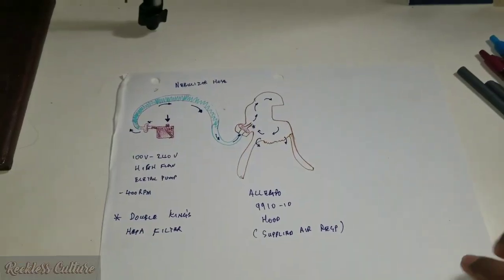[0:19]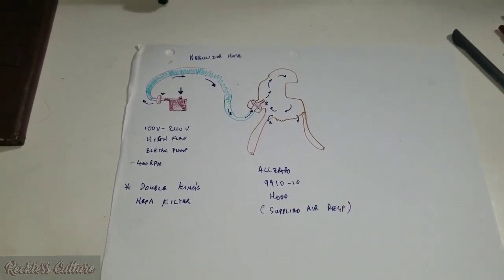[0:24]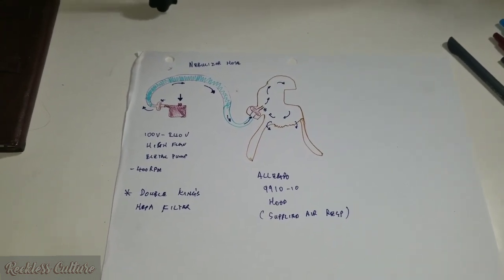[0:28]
I know, trying times. So, initially, what I'm going to talk to you guys about today is how to build your own PAPR respiration system. Let's go. All right, so this is the schematics for the system I built. Well, any general system.
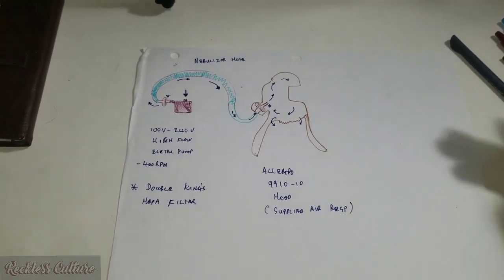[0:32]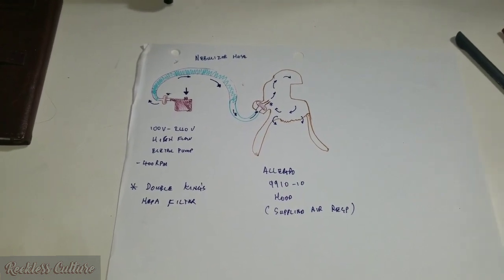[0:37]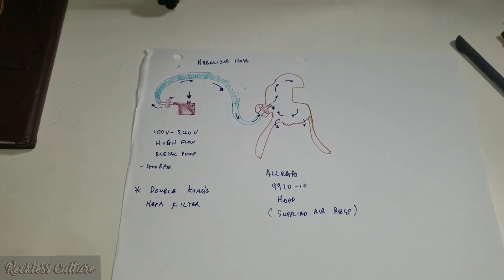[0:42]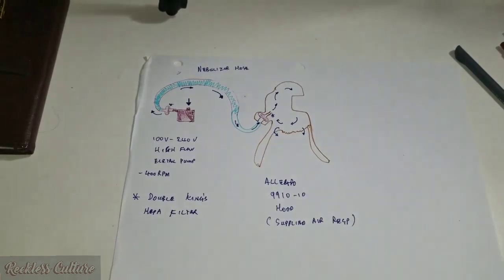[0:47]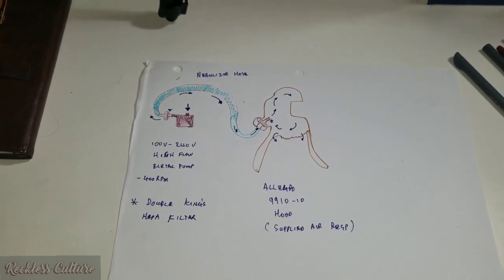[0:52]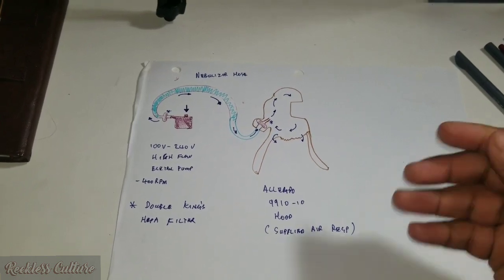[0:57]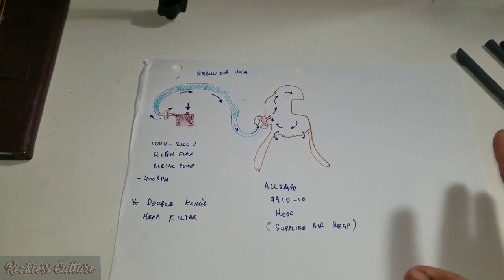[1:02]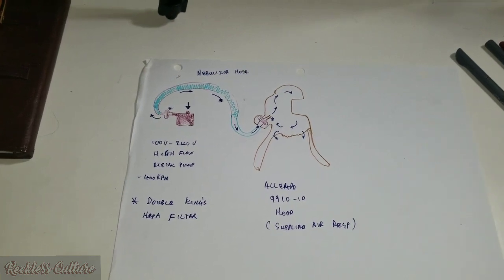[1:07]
For a PAPR system, as you guys know, what's going on in the world today, with the whole respiratory issues with COVID-19 and whatnot, health workers like me and many others need protection against these. So a system like this is very expensive. I'm telling you, approximately $2,000 for a really good one. But instead of spending that money, I decided to build one myself. Now, disclaimer, this is not to replace an actual PAPR system, but this is just for protection in times of need, which we are in right now.
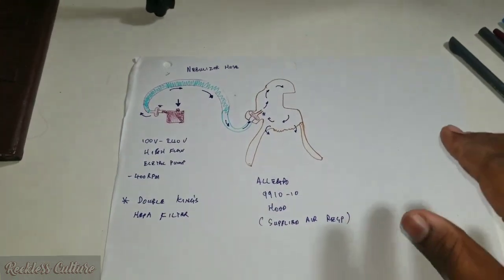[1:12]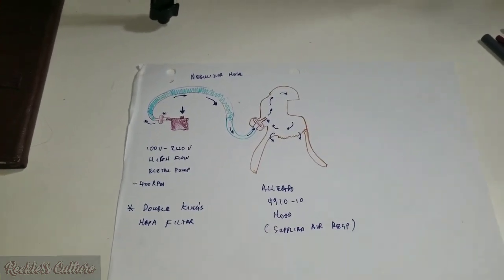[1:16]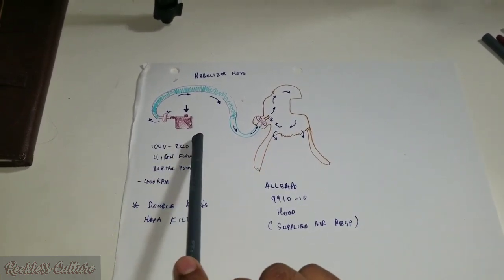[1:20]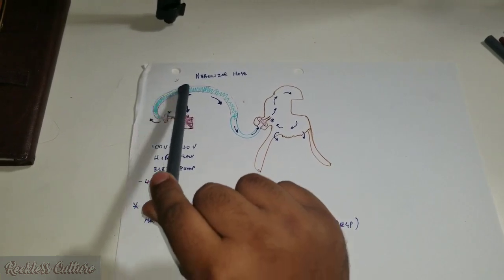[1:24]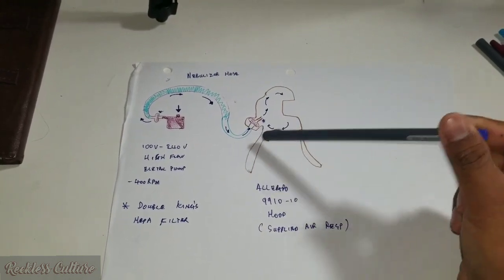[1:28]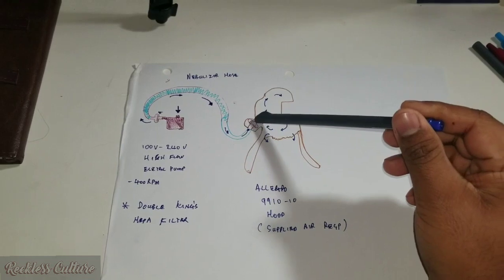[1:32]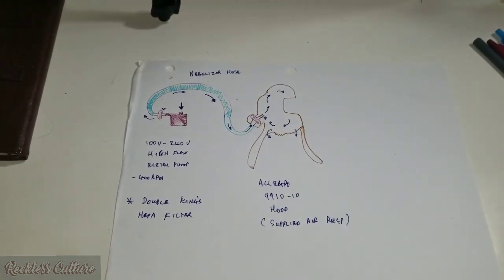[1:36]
So I'll just show you what's going on with mine. I'm sorry for the shadow to begin with. So I'll use something to point with. Okay, so these are the general parts. I have an electric pump, a HEPA filter, and a hose leading up to a hood. The entrance in the hood is the back, and there's also a HEPA filter right here. All right, so the arrows are showing you the airflow.
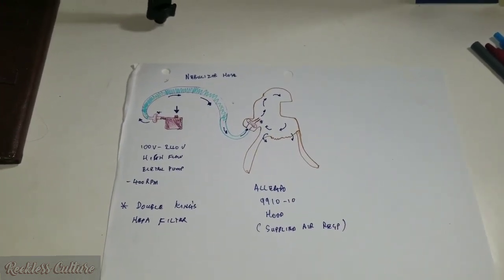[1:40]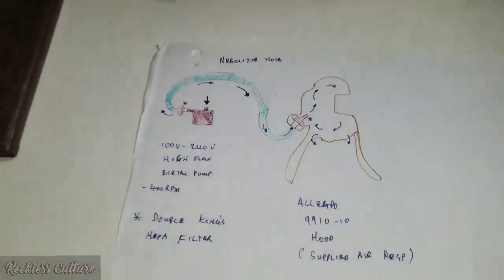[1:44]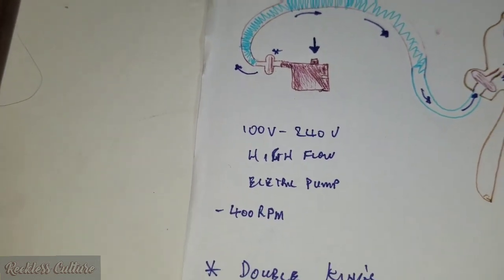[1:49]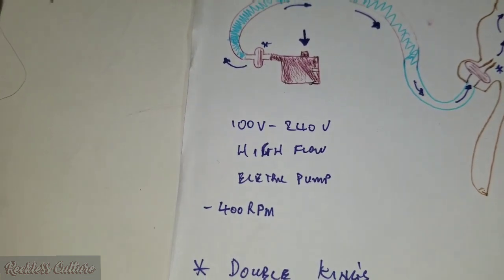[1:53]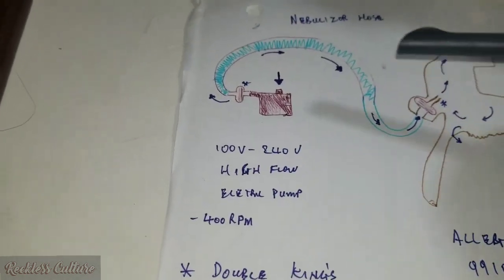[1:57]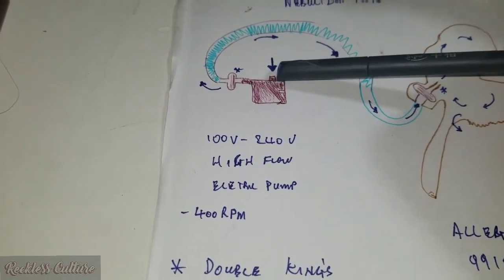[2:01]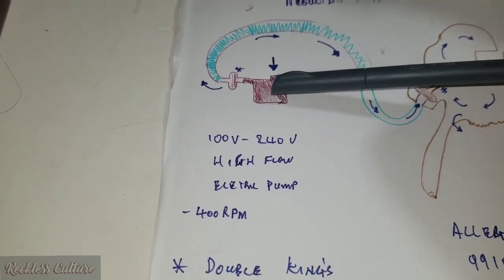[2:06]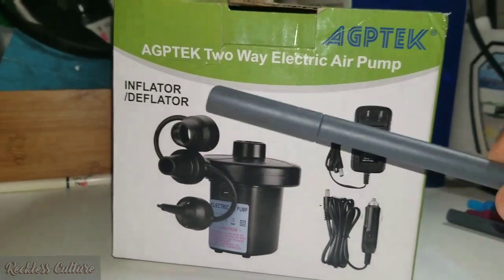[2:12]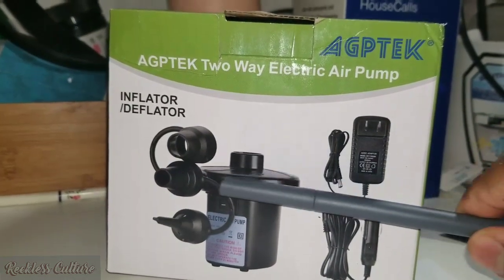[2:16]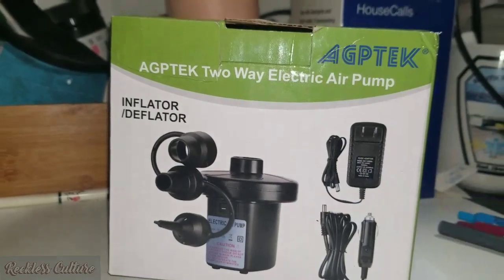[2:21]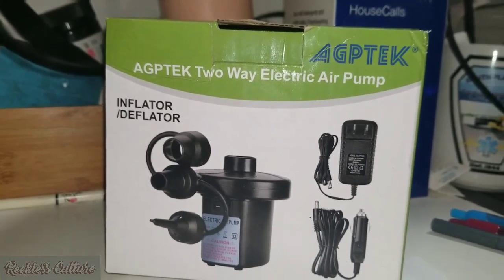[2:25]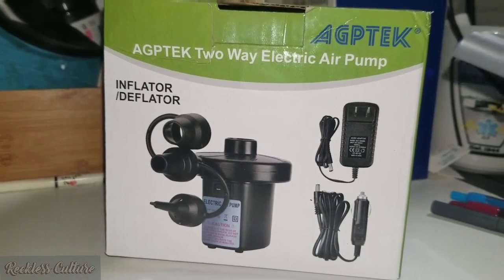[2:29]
All right, so let's start with the electric pump. This is just a drawing, but I'll show you the actual pump from the box. Give me a second. All right, so yeah, this is the pump. This is the point at which it sucks air in from the top, fans in here, and blows it out here. Very simple electric pump. So it's a two-way electric pump. It sucks air in here and blows it out. Very simple. Now, this system does not have any filters to guard us against airborne or respiratory viral or bacterial anything, right?
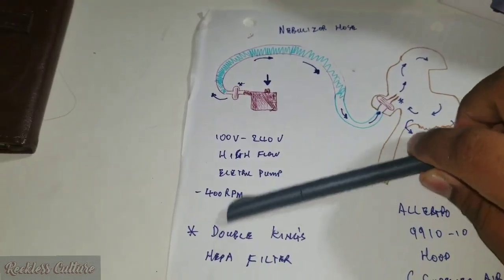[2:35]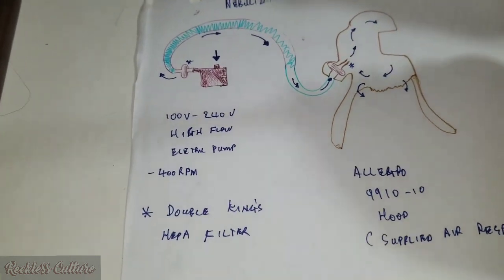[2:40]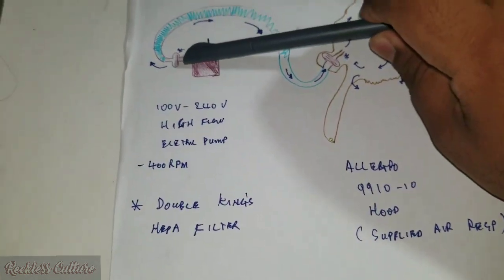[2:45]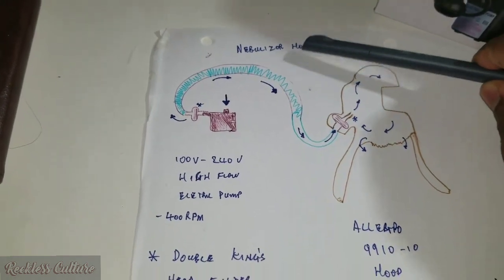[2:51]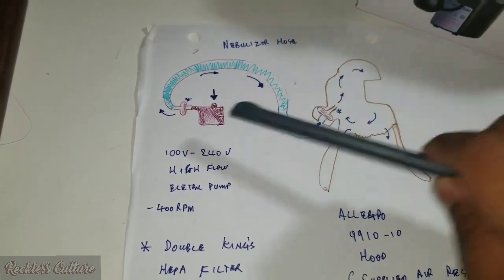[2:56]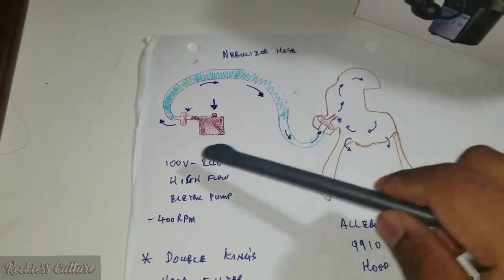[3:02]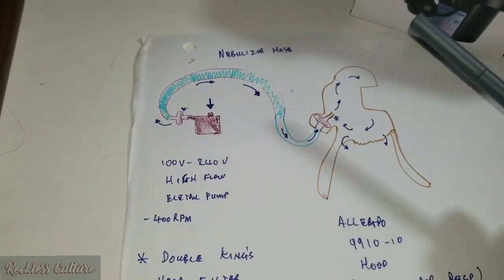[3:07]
So this is the job of the HEPA filter. The HEPA filter is right here. It's a King's HEPA filter. I don't have one to show right now, but it's attached to a nebulizer hose. This nebulizer hose is pretty much the hose they give for nebulizer treatments, or any hose that can fit this, or you could make a little device to fit them on, some zip ties or whatever. A hose clamp is pretty good as well, but that's pretty bulky. And then it leads up to our next HEPA filter here.
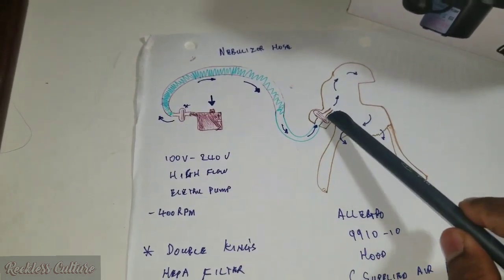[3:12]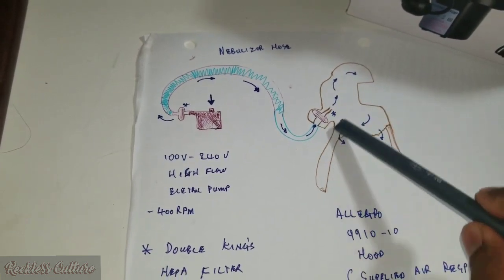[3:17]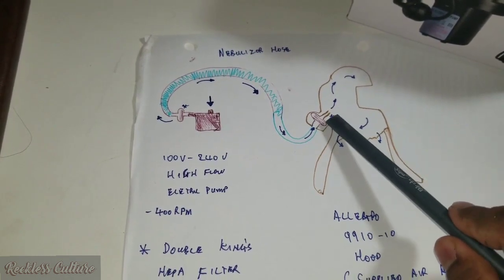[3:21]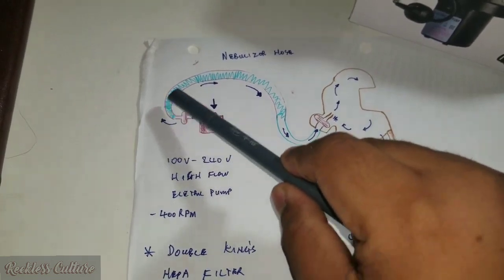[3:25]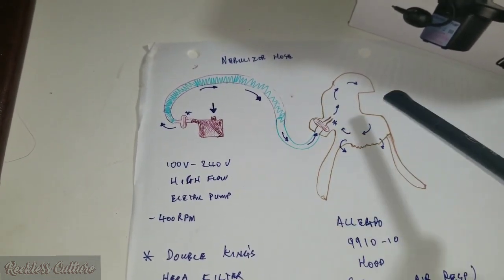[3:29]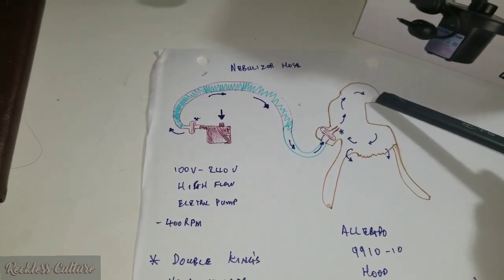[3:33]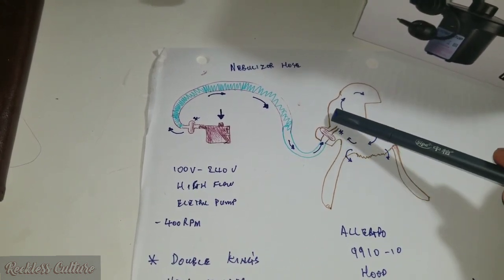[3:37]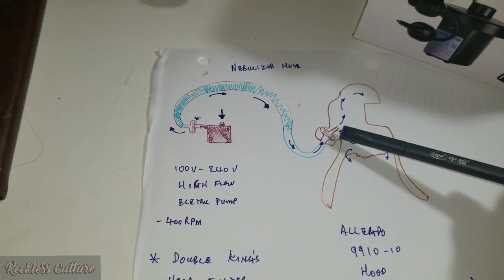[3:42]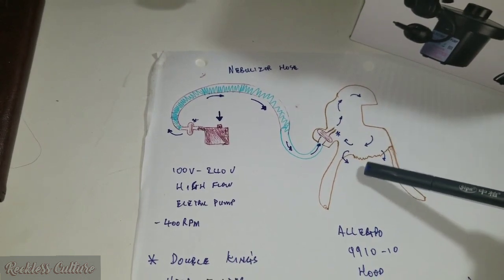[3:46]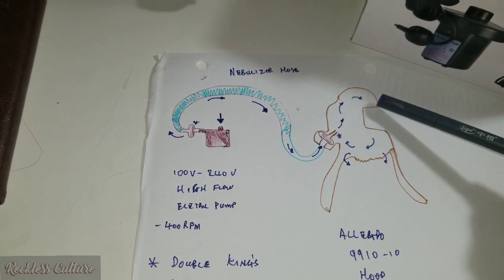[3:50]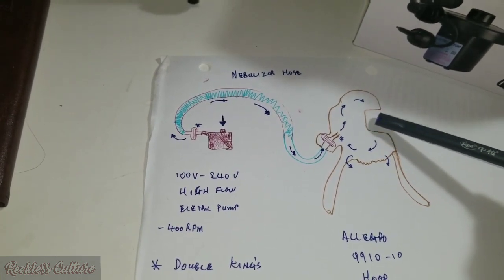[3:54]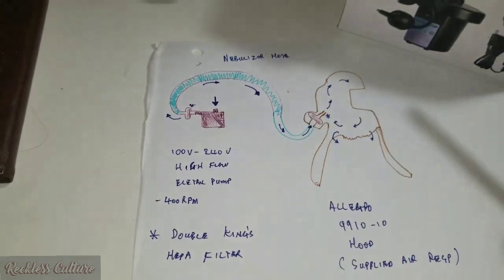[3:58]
So it's a double HEPA filter, and this HEPA filter locks it into the back of the mask where the entrance of the hose is supposed to be. This locks it in, so the airflow is pretty locked in, following the arrows into the hood. The main part is you want it to get over your face. It can come up a little more here, but as long as the air is blowing this way over the head, because if it's blowing down like this, it just exits there. So it blows over the head and keeps the face clear. This is the visible part of the hood. This is a general overview of how you want the airflow to go.
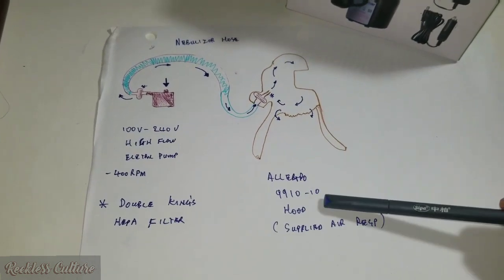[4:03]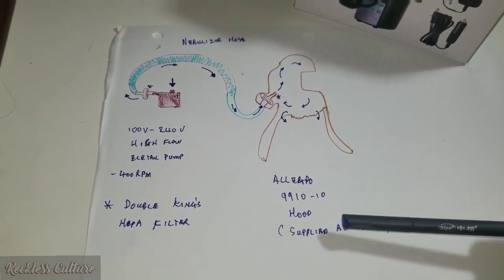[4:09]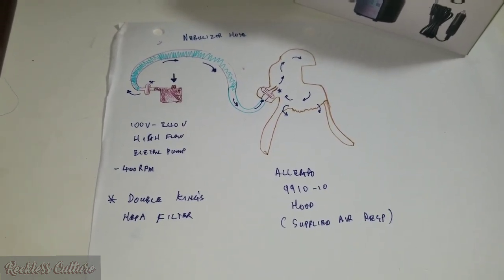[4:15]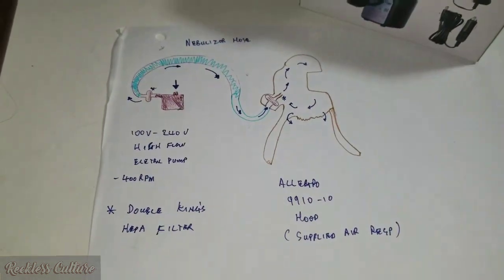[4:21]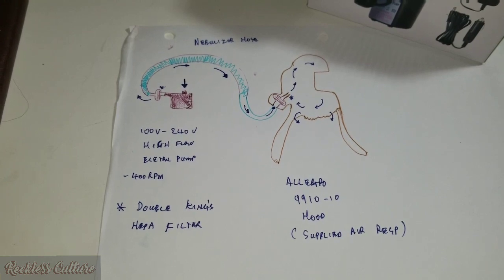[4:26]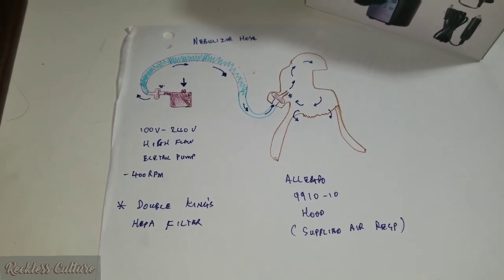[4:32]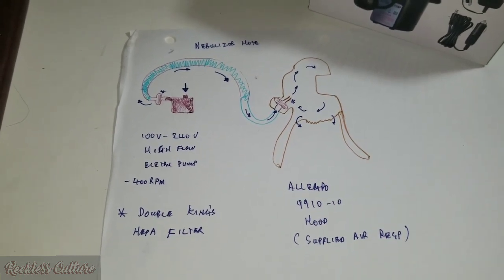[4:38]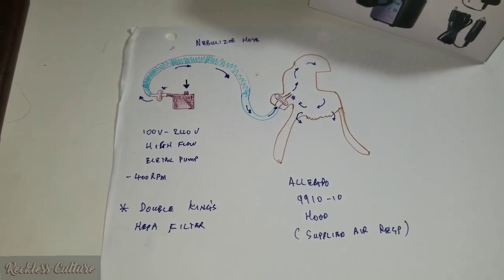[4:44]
My hood is an Allegro 9910-10 hood. This is for supplied air respiration. It goes between both low and high pressure. But for this one, it's just going to give you 400 RPMs. A standard PAPR system is going to give you around 150 to 170 based on viral load. 170 is on the high end of high viral load. So this gives you around 350 to 400 RPMs, which is much higher than any PAPR system. But this is also based on our battery input.
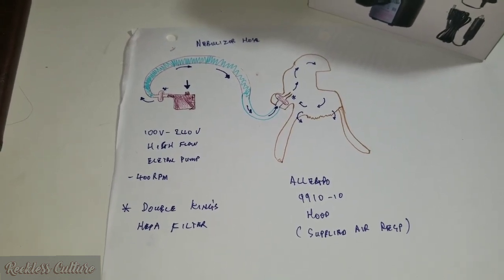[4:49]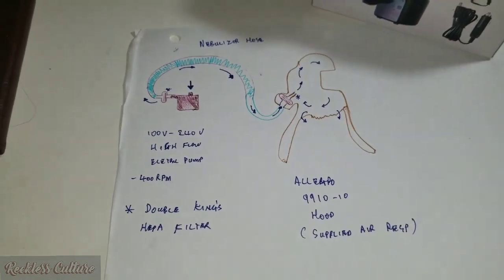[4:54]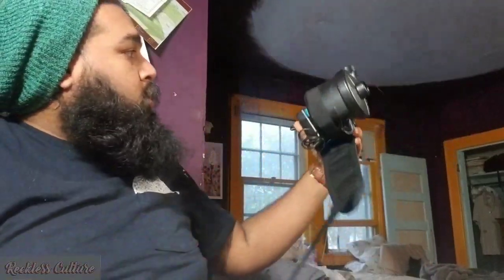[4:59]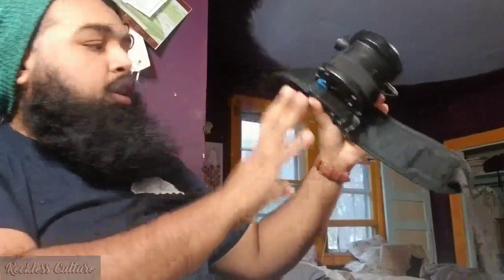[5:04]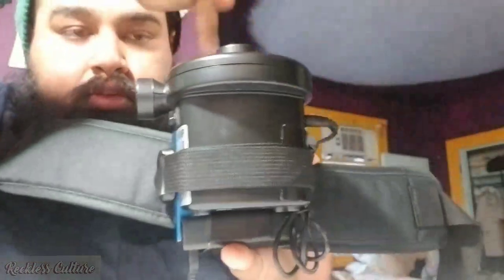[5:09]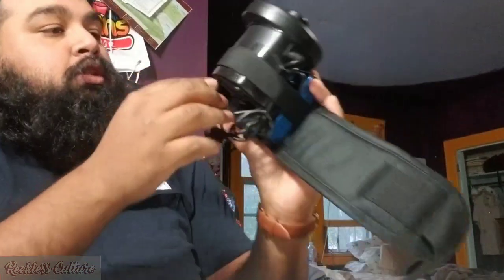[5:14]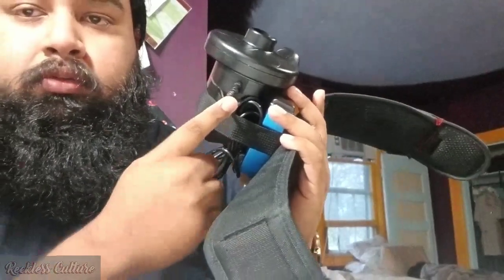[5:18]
And for our battery input, I'll show you what is our power and how we manage to make this system portable. Alright guys, so this is the whole filter setup I kind of rigged myself. So this is the pump input, output, the controls on and off, and this is where the input for the power goes.
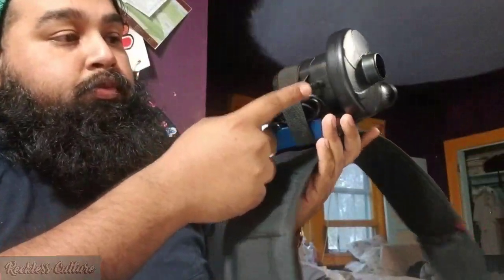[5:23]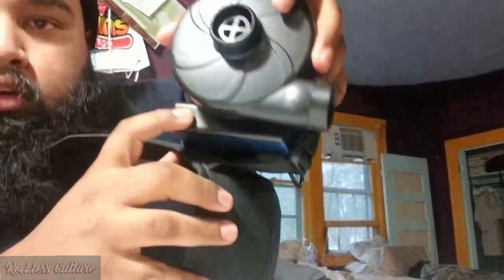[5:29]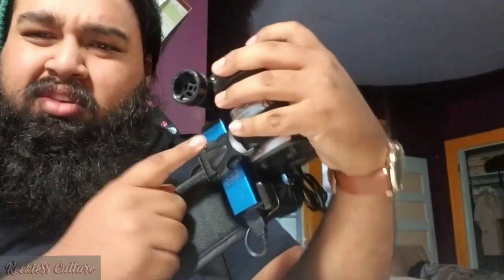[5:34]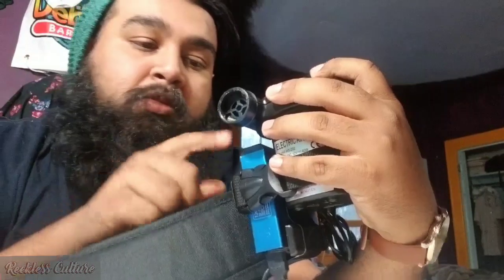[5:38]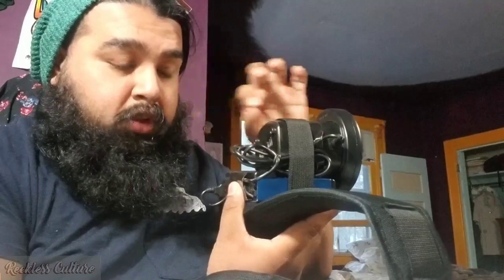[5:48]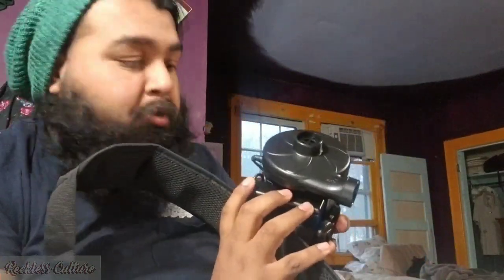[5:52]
So this is plugged into a portable battery system. It's just one of those regular phone charging battery systems. For this one, it's a little stronger. I can't remember the specifics since I got it as a gift a very long time ago. But this holds its charge for more than 8 hours, give or take, on full power usage. Essentially, like charging a laptop or something.
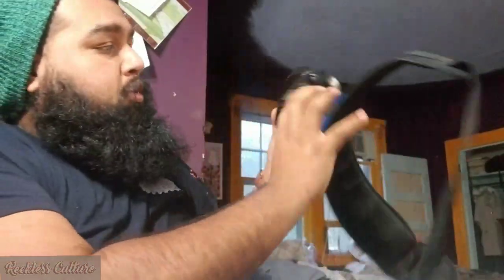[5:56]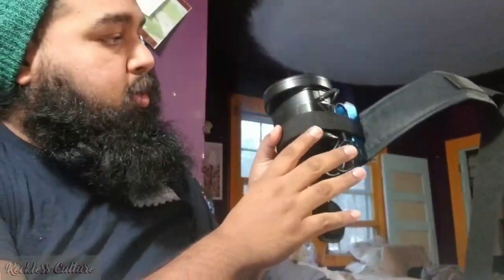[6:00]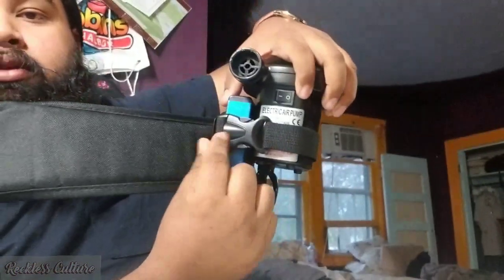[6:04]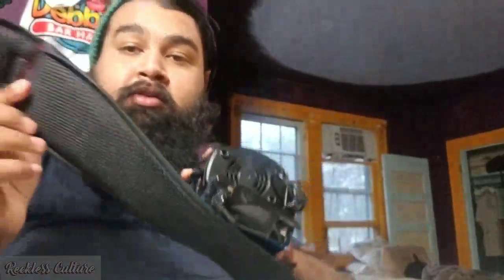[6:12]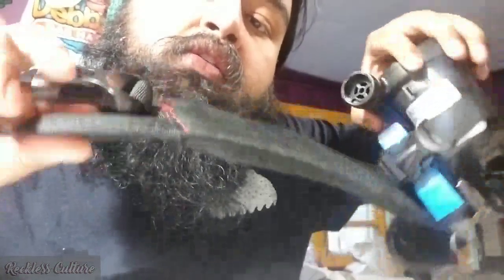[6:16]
So this is generally what I made and how it packages. With a little strapping both to each other, a little clip to unlatch it if you like. And then it's attached to this old backpack. This is just a backpack strap cut and then sewn at the end here. So these are sewn together. This part is a separate part from a different strap. And then this clips on together.
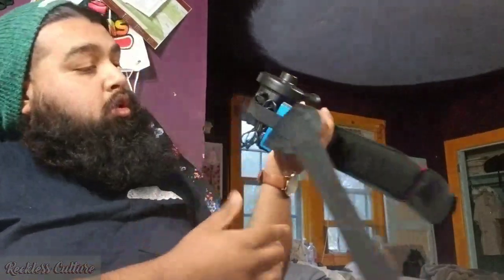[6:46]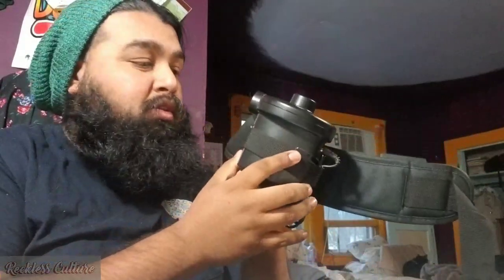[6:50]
And it's just suited for me. So this is not really adjustable. You could always make it adjustable by making a longer strap. This one is just pretty much for me. Alright, so this is how it's generally packaged. Well, how I packaged it. And it's kind of bulky, but it's a proper system. It's supposed to be a bit bulky.
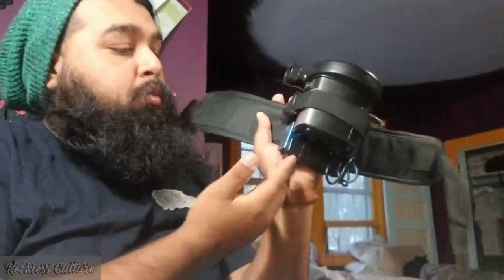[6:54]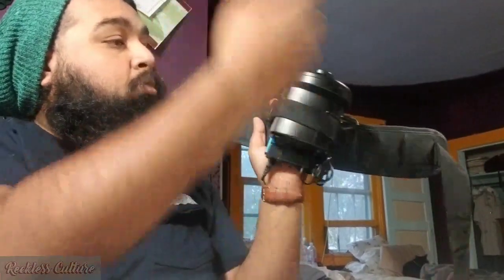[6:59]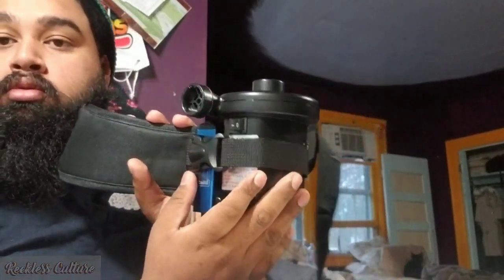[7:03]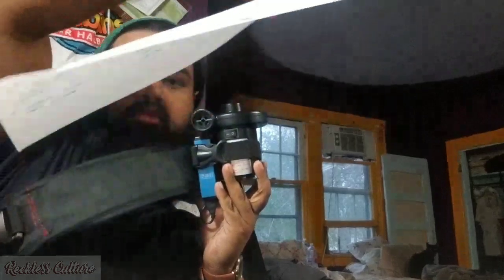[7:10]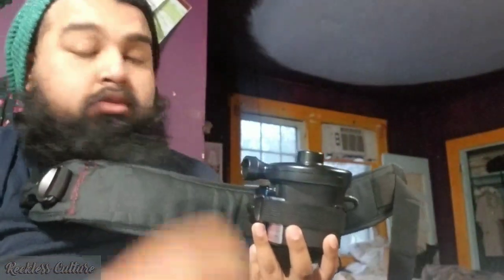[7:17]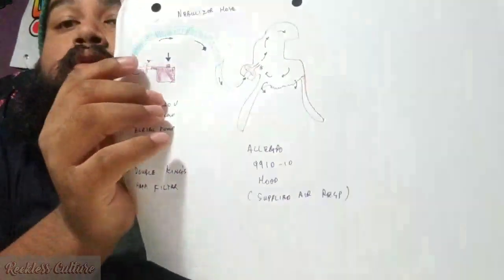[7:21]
So, we covered the battery system. And then when you're ready, just turn it on. And it blows air right out here. Go ahead. So there you go. It blows the air. So this is the initial part of the system. This one right here. Now I'll go over the hose and the hood with you guys.
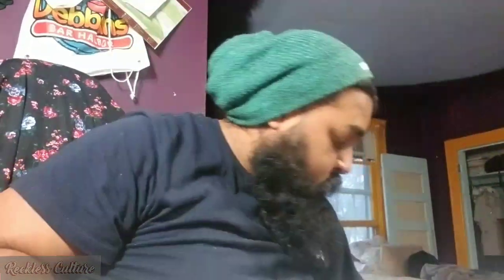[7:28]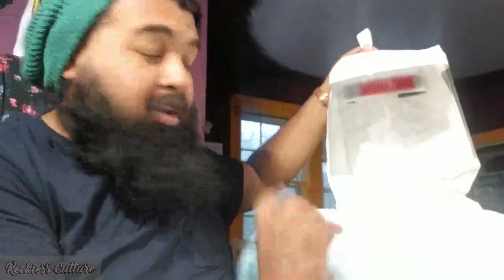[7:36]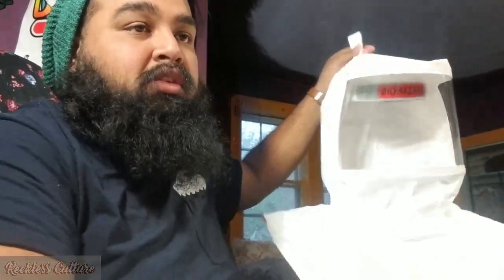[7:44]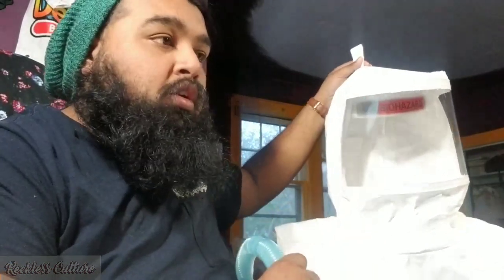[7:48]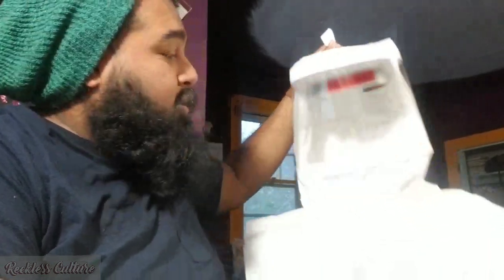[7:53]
Alright, so this is the hood I bought. Now the main reason I wanted a hood is because I don't want to cut my beard. And I have long hair as well. So I just don't want to have an N95 that's not going to make any sense. It's just going to cut my respiration debris, but it's not going to completely eliminate it. So this is my hood.
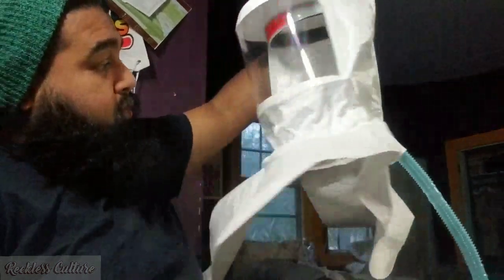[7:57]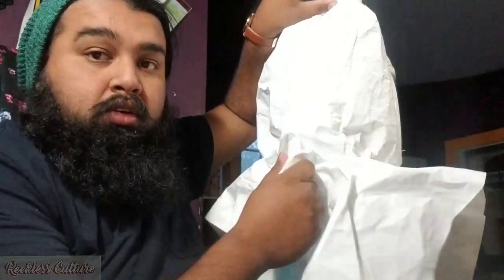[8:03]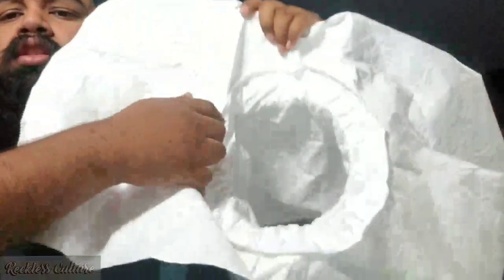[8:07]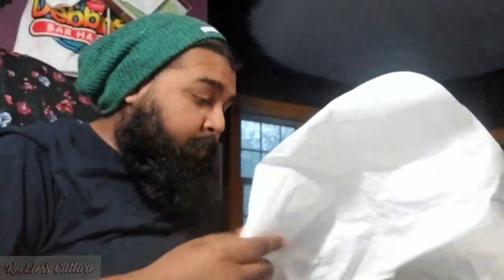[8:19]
Right, pretty spacious. This is the intake for the hood in the back here. If you can see in here, there's a little tab that doesn't directly expose the inside to the outside, so it goes upwards, as you can see. So that also directs the air to the top of your head.
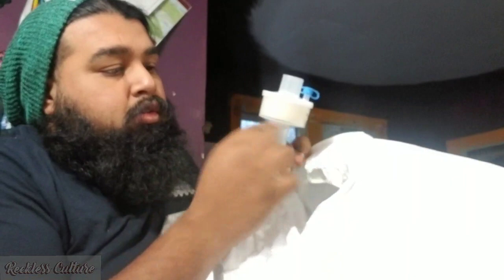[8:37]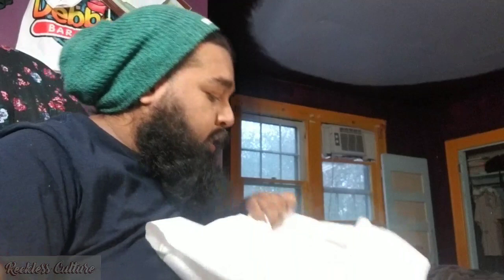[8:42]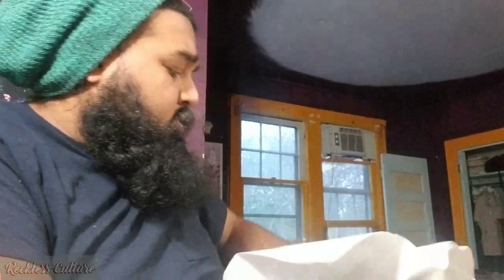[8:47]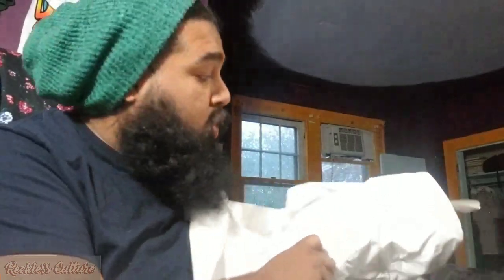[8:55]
Alright, and in here, let me just feed the hose a little more, show you my next viral filter. So the viral filter also doubles as a stop for the hose to not, there it is. It just locked right in there. So that doubles as a stop for the hose not to fall through or anything. So that connection, you want to make sure it's really strong. All right, so that's my hood.
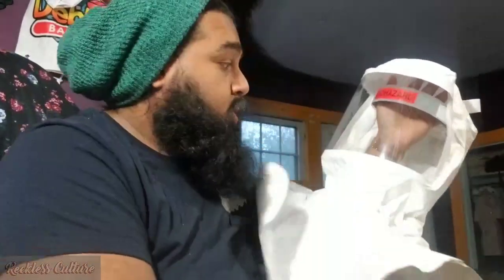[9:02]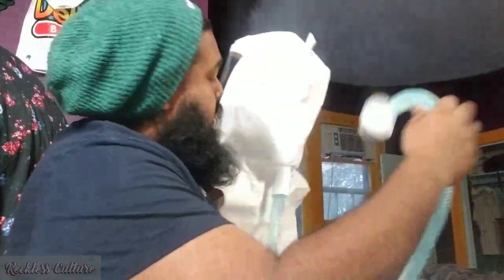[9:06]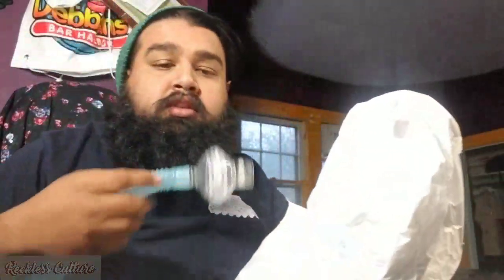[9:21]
This is my twin. I'll put it on in a minute, but since we got everything, there it is. And this is the hose. This hose was really long, so I had to cut it, but I cut it at the notches. There's a notch here, just cut it right between the two and then just attach it. So this is my next, this is the King's HEPA filter.
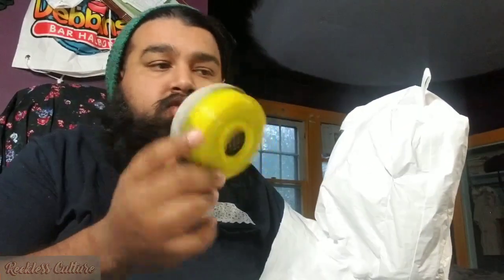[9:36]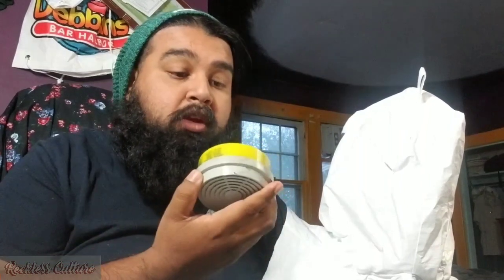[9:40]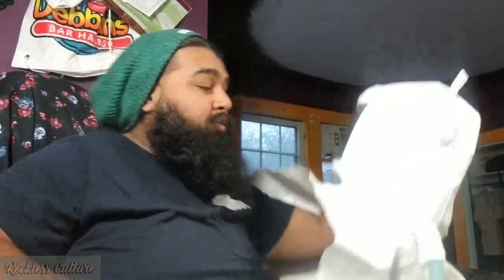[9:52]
This is a different brand, but I got it from one of these respiration thingies. You could also use these respiration stuffs to attach to the pump itself, but it doesn't fit, and then you kind of need a bracket for it to fit. And I'm just kind of going the easiest way possible. And also I don't want it too bulky. It's already pretty bulky. But yeah, so this is my system.
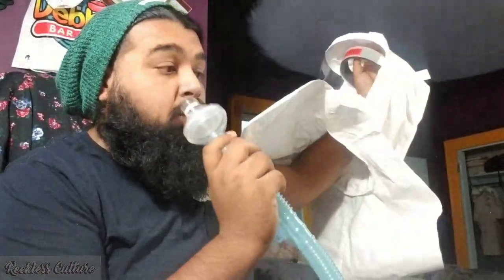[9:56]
Alright, and I'll strap up, put it on myself for you. Now I'm going to turn it on so you can see some fog action. All right.
As you can see, I'm fogged up. I'm in the system. So there it is. It's attached to me. I don't know if you can see this, but let's turn it on because I am dying. All right, here we go. All right, I can feel the air. And there we go, the fog's disappearing.
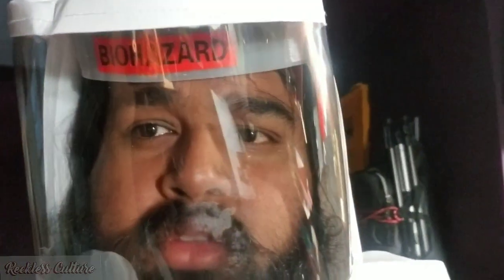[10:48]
All right. So the battery system I have is not at its full potential. There we go, the fog's gone. So you can see. And I could feel the air rushing over my face. It's not that strong, but it's going to do the job. And you could always change the battery pack. I'll probably change my battery pack. But yeah, let's get back to the table.
All right guys, so there you have it. DIY PAPR system. I'll just put this out there. It's probably not going to be as good as your old PAPR system. It's probably going to last as long as this electric pump holds up. Let's hope it's going to get us through each patient contact. But the battery is going to last longer than anything else.
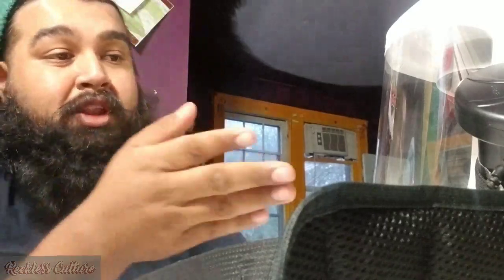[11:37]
It's rated for 8 hours. I've been on camping trips, isolation camping, a lot of stuff with that battery itself, and it lasted throughout like a week straight. So yeah, this is my first time building one of these. Together with a lot of research and field experience, I kind of got some stuff put together.
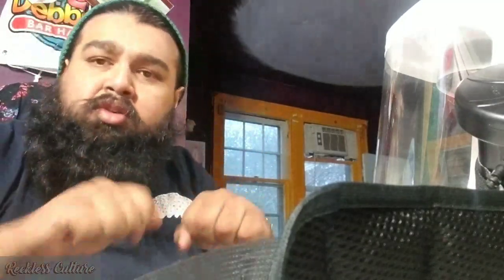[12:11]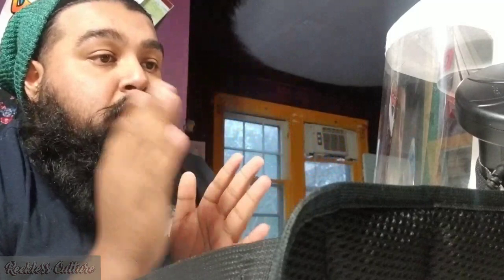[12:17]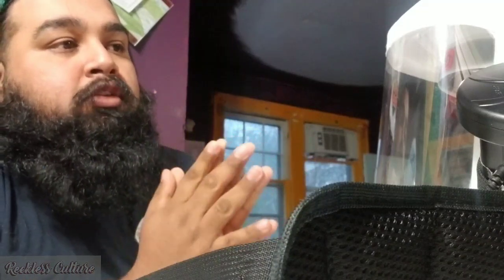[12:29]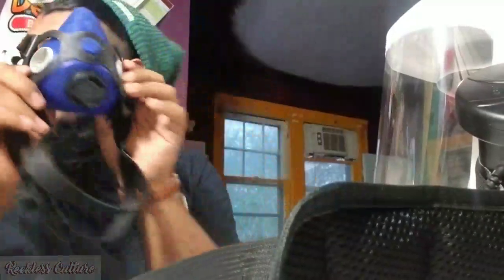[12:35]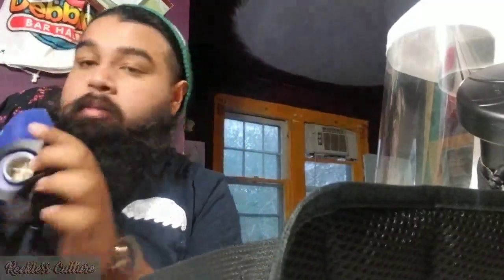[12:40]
As I said, things that you can replace: the nebulizer hose. You could use a regular vacuum hose or a smaller hose that can fit. Any hose can fit. You want a bendable hose so you can maneuver it when you have to put the full suit on. The pump, I'll link it in the description. Very simple pump off Amazon, you just want to make sure you check the rating and its power usage. The HEPA filters, I was lucky because this mask is also one of the masks I was using, it uses these parts, but I got the HEPA filter replacement for it.
Good luck guys. I know this is a really hard time for a lot of people, both healthcare professionals and patients and family members of patients and everyone in quarantine and who's unable to work, a bunch of financial stuff, together with my family. It's a struggle everywhere. I just want you guys to be safe. I'm putting this video out there not to replace anything and not to tell you this is what you need, but this is an alternative in this hard time when there's probably no stuff available to make anything.
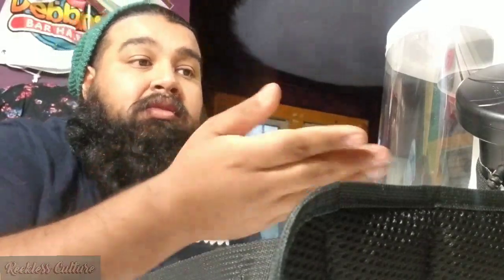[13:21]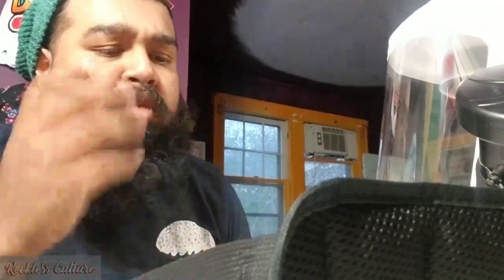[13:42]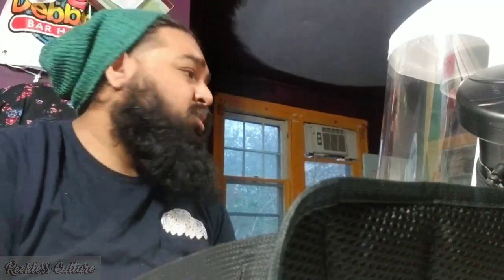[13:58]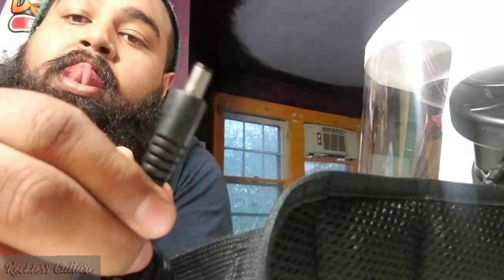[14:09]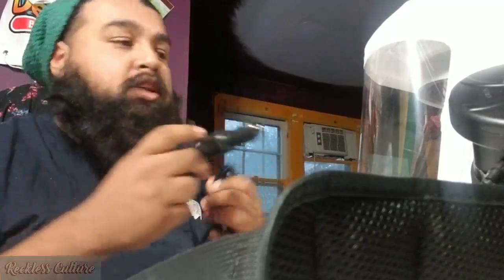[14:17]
The connections as well, you want the USB to this adapter. I don't even know its name, but it's like the circular adapters. Let me see if I can show you. Yeah, here, this adapter right here. You want a USB to this, or you could just make it. I get a regular car charger and just snip this, attach a USB. Whatever is going to work for you guys.